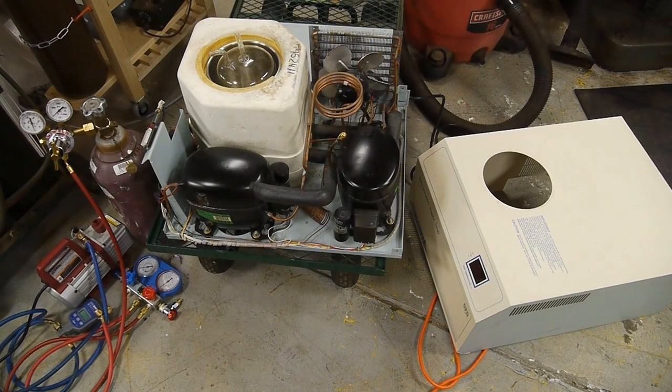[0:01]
Hey everyone, I recently picked up this refrigeration unit at a surplus sale and just got it working last night. So I thought I'd talk about what I learned about the system and how I got it working.
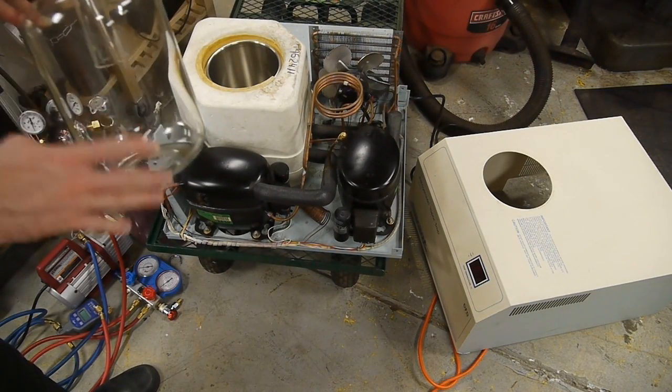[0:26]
This unit is called a cold trap, and the idea is that this chamber here gets down to about -100°C, and you connect your vacuum line to this glass chamber here and submerge this in alcohol to help conduct the cold temperatures into the glass vessel. And then as you're pumping down a system with your vacuum pump, it's so cold on the exterior of this chamber that all the impurities in your vacuum line will get condensed, solidified into here, and won't go into your vacuum pump.
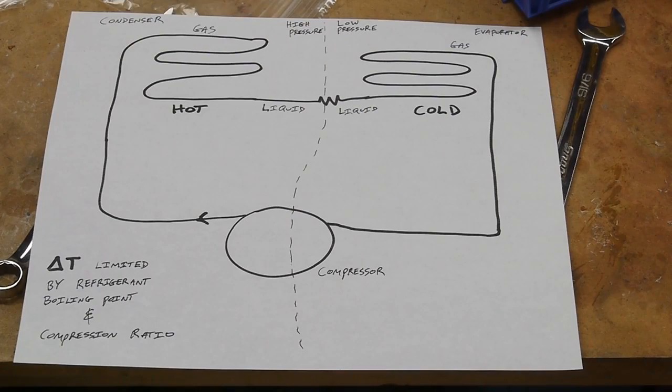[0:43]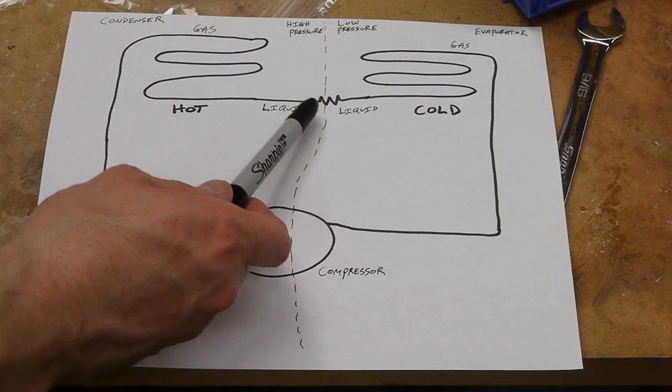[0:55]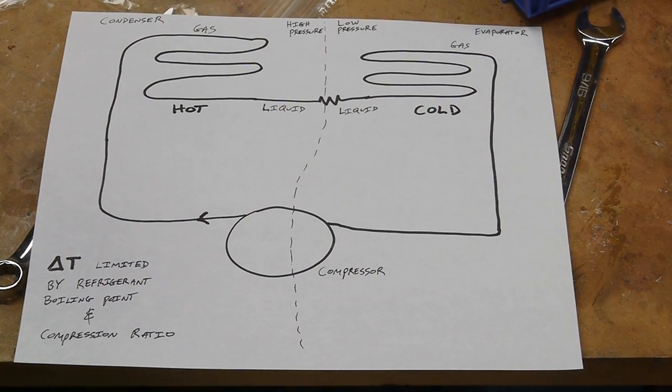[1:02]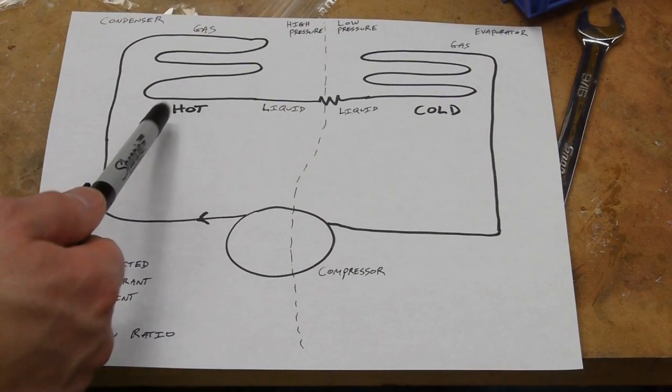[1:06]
In a basic phase change refrigeration system, we have a high pressure side and a low pressure side. And the two sides are divided by the compressor itself and a restriction here. And this is very often a capillary tube. So if you ever look into a refrigerator and see a coil of small diameter copper tubing, it's most likely serving as this resistance between the high pressure side and the low pressure side.
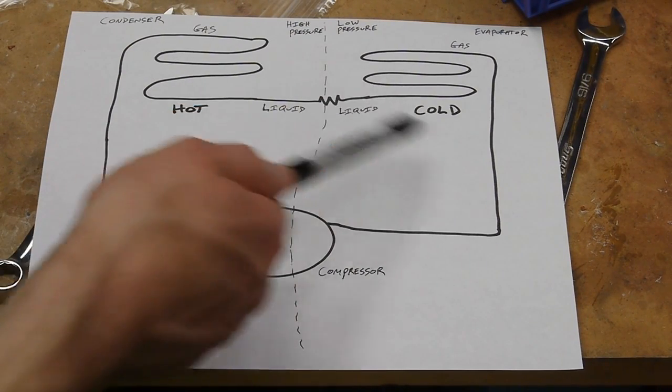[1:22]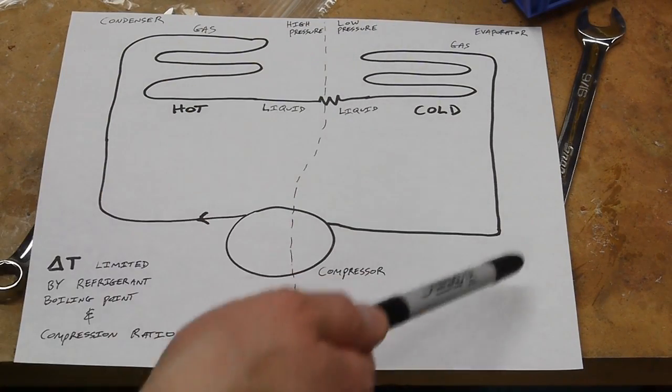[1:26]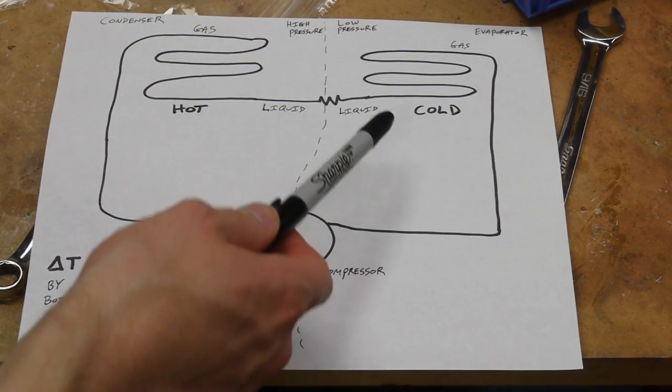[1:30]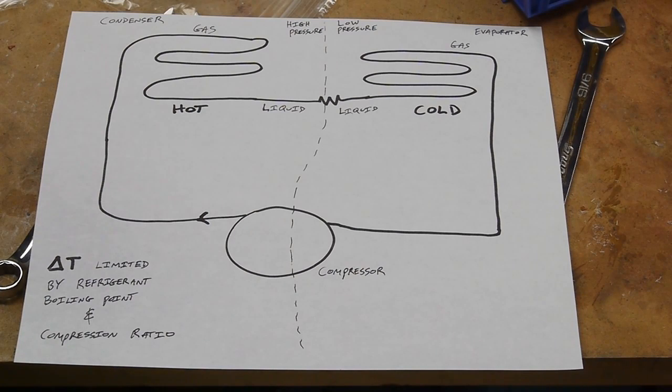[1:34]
So the way this system works is the compressor raises the pressure here, and when we extract heat from that compressed gas, it condenses to a liquid, which gets sent over to the cold side of the system. And since the pressure is lower over here, that liquid will now evaporate, turn back to a gas, and complete the cycle. So we get a large amount of heat moved from here to here, and we're making use of that phase change point in the refrigerant.
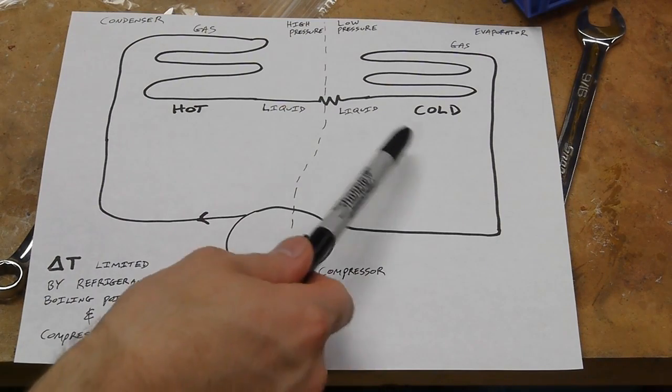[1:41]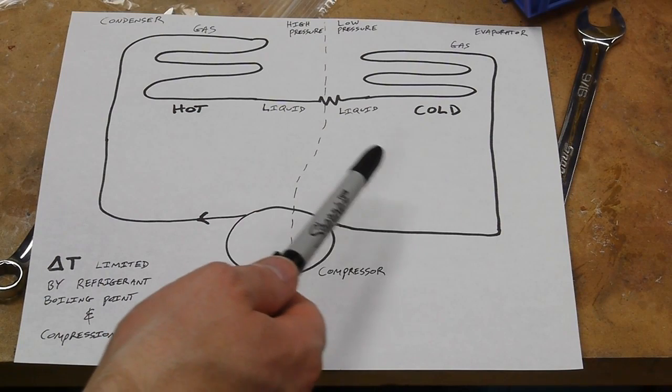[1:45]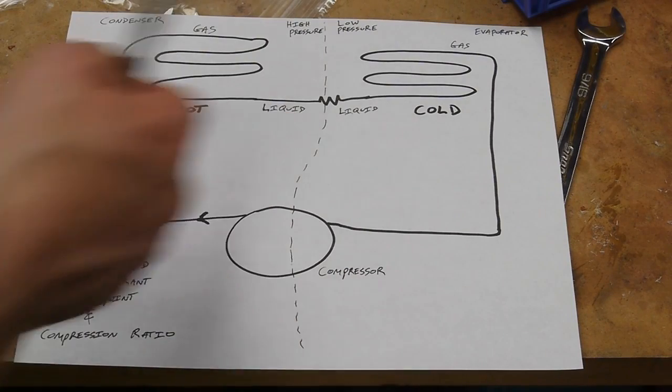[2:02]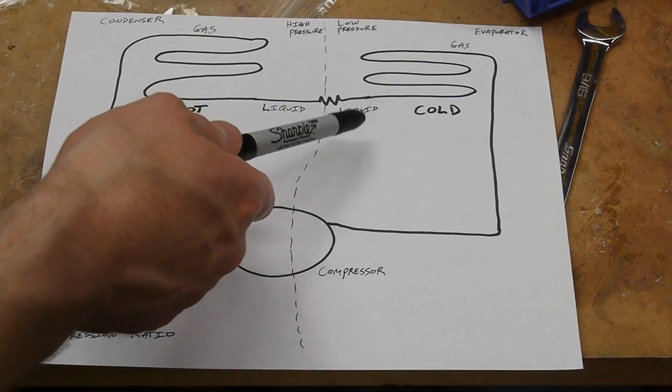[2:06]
So what if we want to make a system that gets very cold? What if we want -100°C here? How come the system doesn't just get colder and colder as it's moving heat from here to here? The answer is that it depends on the fluid properties of the refrigerant. So if the refrigerant itself boils at -40°C at a very, very low pressure, it almost doesn't matter how good the compressor is. Once this cold side gets down to -40 or a little bit below, that liquid is not going to want to evaporate, and we're not going to get much more heat transferred.
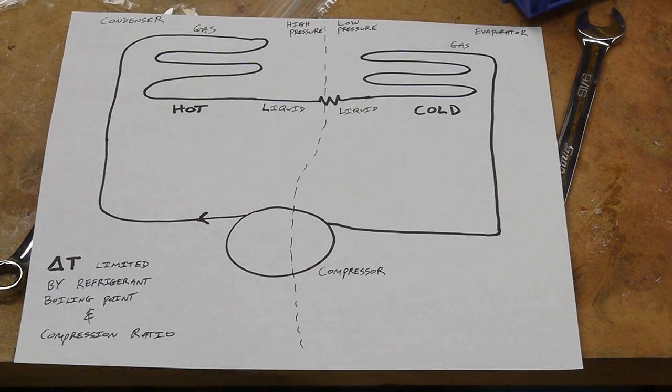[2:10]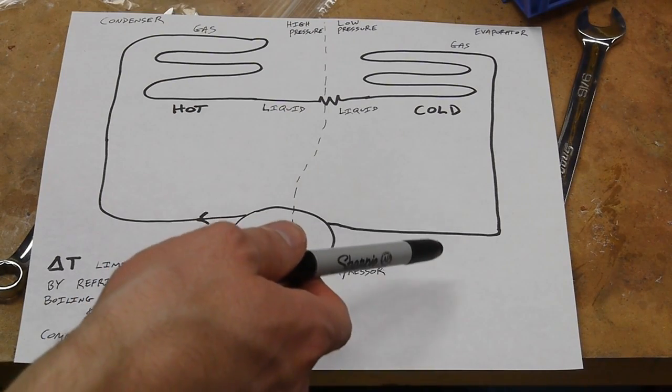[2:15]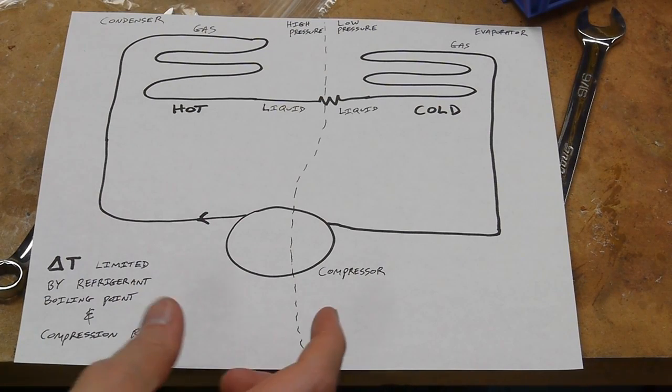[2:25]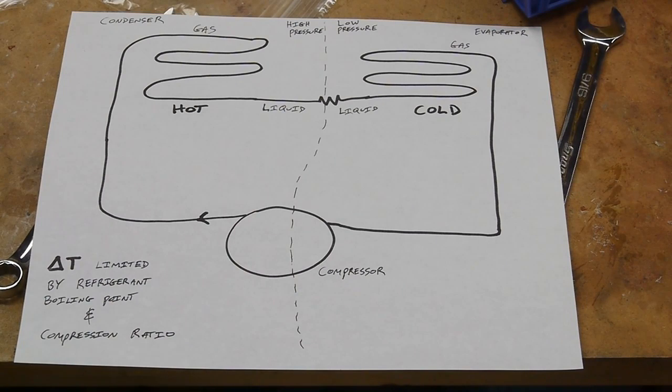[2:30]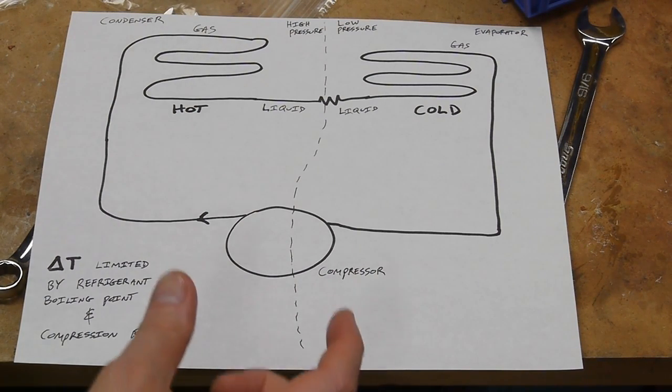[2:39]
Now you could say, well, I just want a bigger and bigger compressor, and I'll just make the pressure lower and lower here, and eventually that liquid will boil because we can always get the pressure arbitrarily low enough. But it becomes a hugely diminishing return, and the bigger the ratio of compression across your compressor, the lower the efficiency of the whole system. So if we want a -100°C refrigerator, it's very impractical to do it with a single refrigerant like this, just because for a given material, our compression ratio would have to be enormously high to make it work.
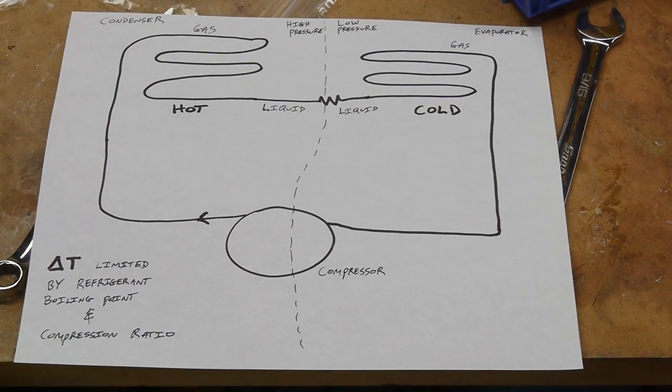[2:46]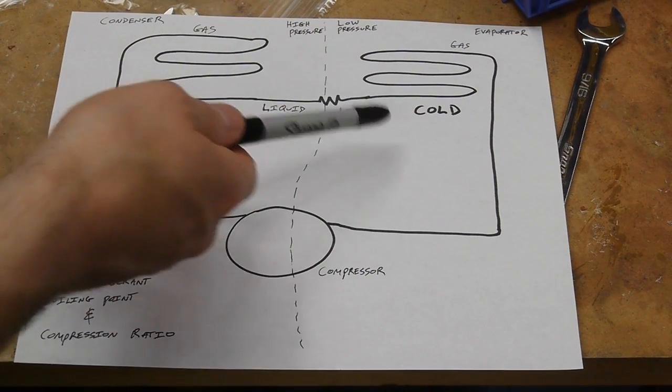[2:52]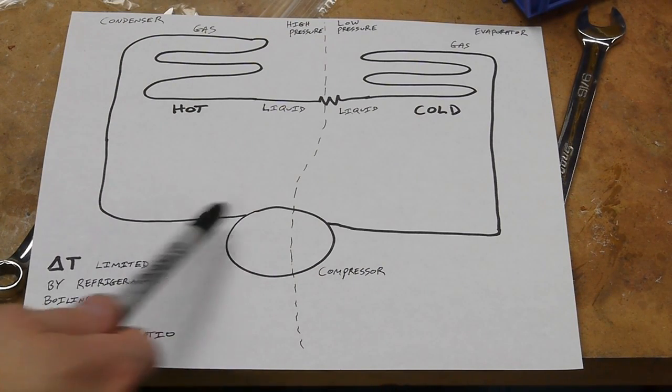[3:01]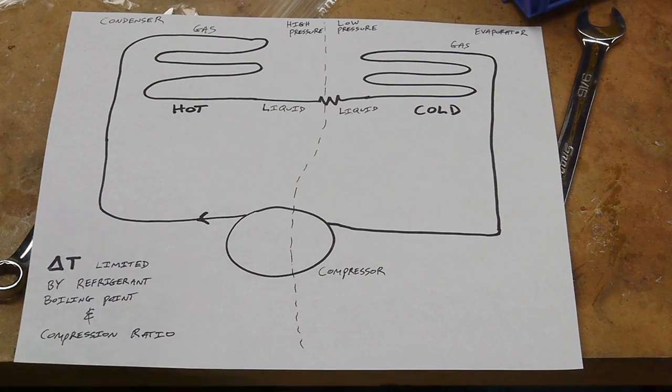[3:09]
Like for example, if we had a substance that boiled at -150°C so that we could still have a phase change here, the pressure ratio might have to be 50 or 100 to 1. And that makes other parts of the system difficult too, since now the copper tubing here has to be thick enough to handle the really high pressure over here, and the compressor has to be extremely over-specced to have such a really high compression ratio across it.
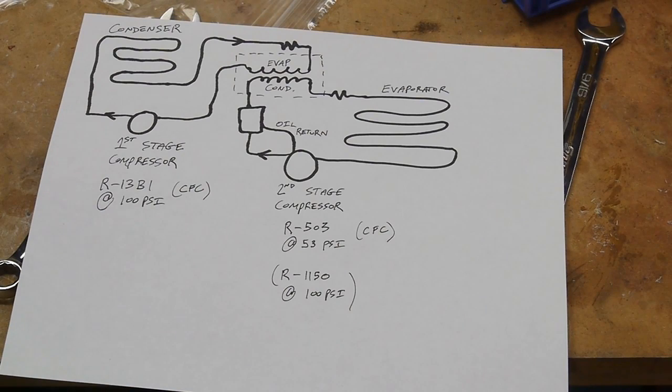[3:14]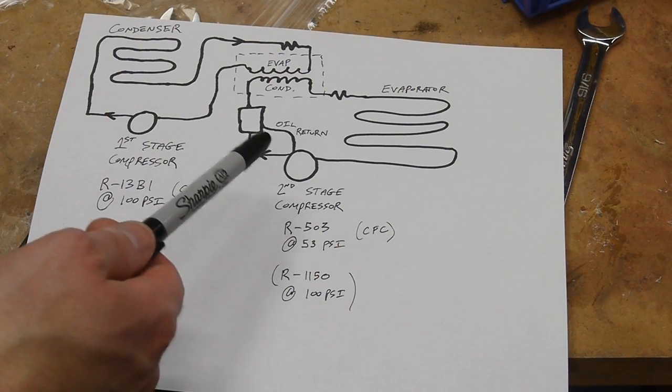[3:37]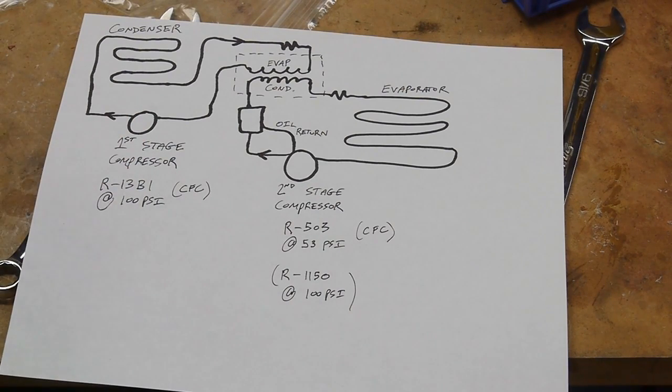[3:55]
So one solution to this problem, but not the only one, is to break our job into two pieces. So this is called a two-stage refrigeration system, or a cascade refrigeration system. And the idea is that the first stage will take us down from room temperature to an intermediate low temperature, and we can select a refrigerant that boils at an appropriate point for that. And then we'll have a second stage refrigeration system that takes us from that intermediate pressure down to the very low pressures, and we can choose a different refrigerant for that, which is better tuned for that really low temperature operation. So essentially we've taken that massive compression ratio and spread it across two different compressors, in fact two different systems with different refrigerants.
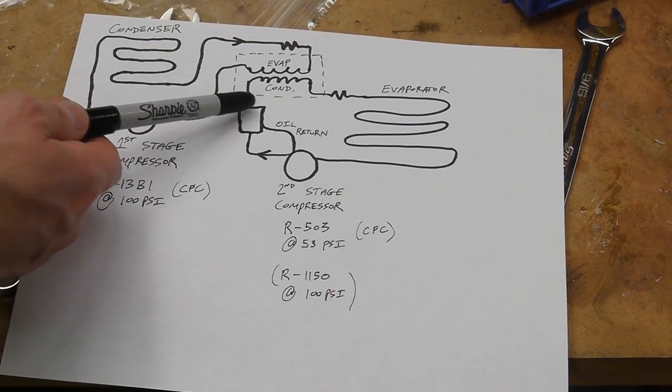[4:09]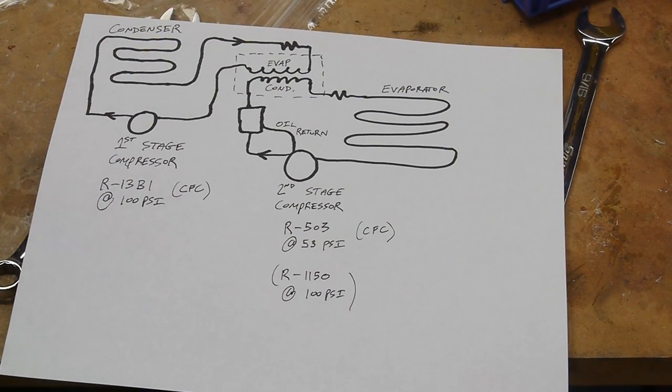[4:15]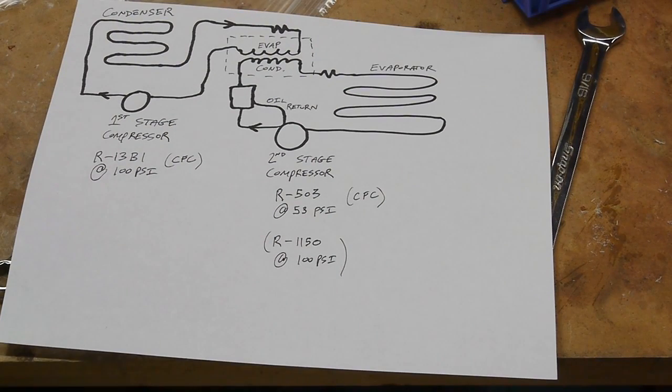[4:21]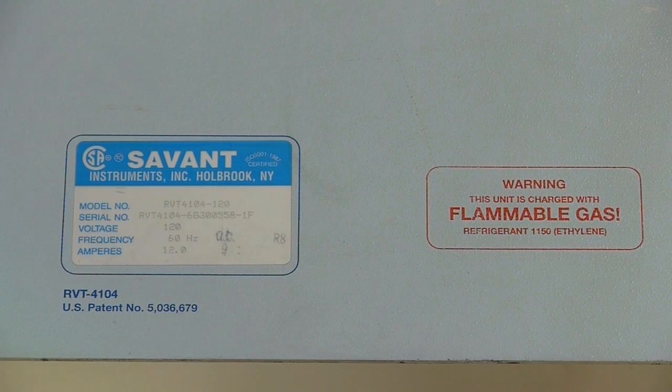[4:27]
In this case, the condenser in this cold trap unit operates above ambient, probably 40 or 50°C. The heat exchanger where the two systems join together is maintained at about -15°C or even -20 or -25, and then the cold side is about -100°C. So the manual specified two refrigerants that should be used in the system. However, there's a decal on the side of the unit that actually says it's charged with R1150. And I'll show you in a minute that I opened the system up and found evidence that it looks like the refrigerant had been changed in it.
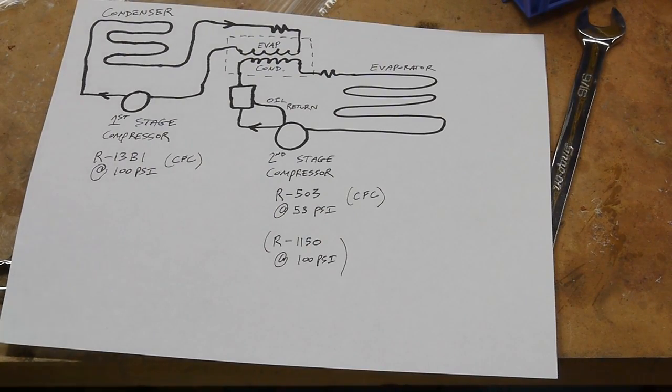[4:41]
I should also note that in most refrigeration systems, the amount of refrigerant in the system is usually stated in terms of mass. So if you go to charge your car with R134A, it'll say it needs, you know, 1.5 kilograms or something like that. And the reason is that when you add it to your car, at the pressures required to have it in the system at ambient pressures, there will be a gas-liquid mix inside there. So you can't really just measure it. You can't measure the amount of stuff in the system just by checking the pressure, because the pressure will always be the same until you completely fill the system with liquid, because there's this equilibrium between the gas and the liquid in there.
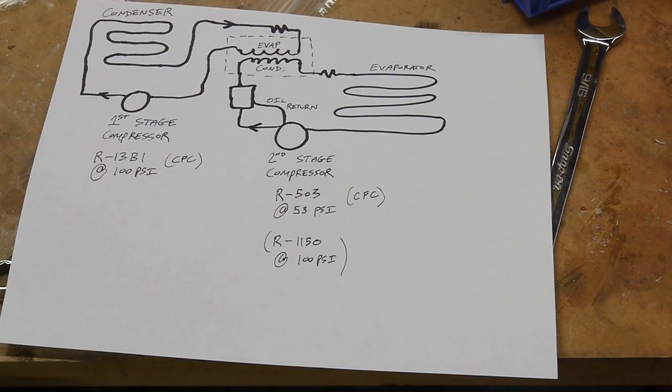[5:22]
In these low temperature systems, the refrigerant is always a gas at ambient temperatures and pressures within the system, the baseline pressure. So if we know the ambient temperature, we can use a gauge just to figure out how much substance is in the system, just because it's linearly related, just because it's a gas at all times.
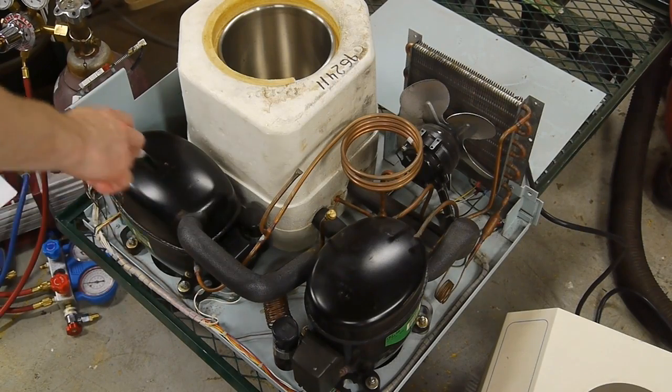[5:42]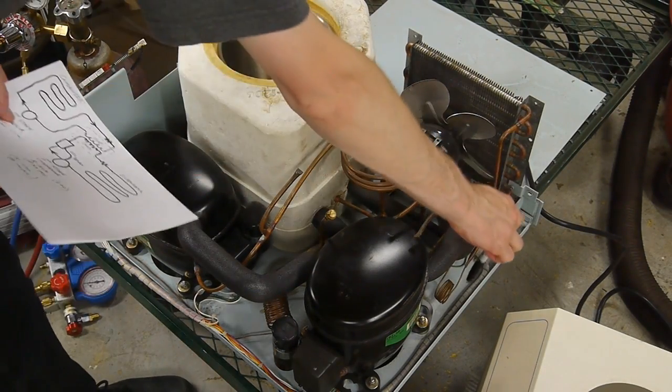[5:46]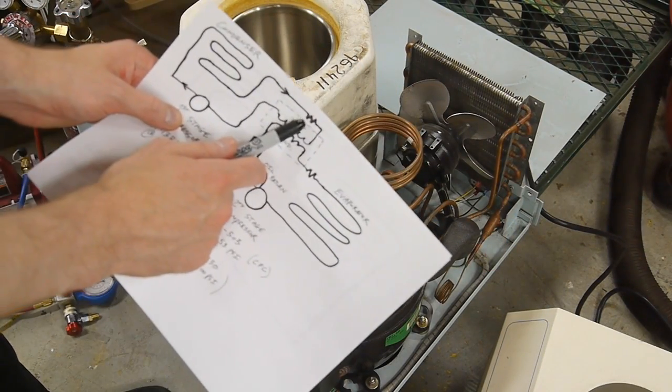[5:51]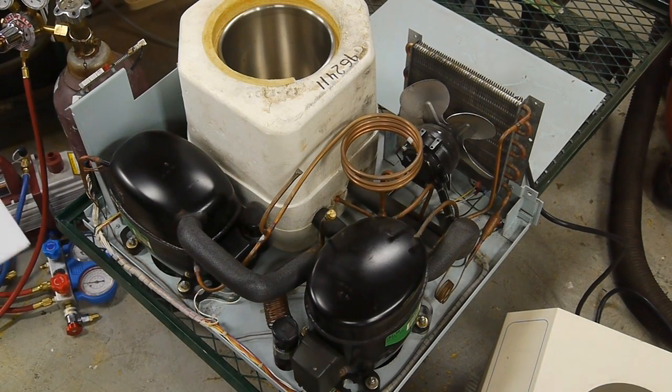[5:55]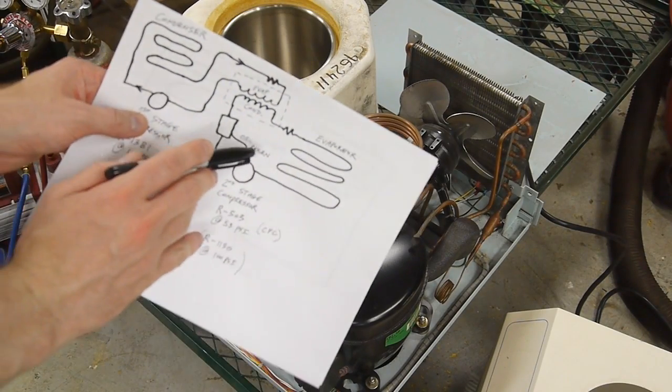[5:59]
So here we can see the two compressors. This is the first stage and this is the second stage compressor. Here you can see the capillary tube, the restriction in the first stage system, which is here. This is actually another capillary tube, but that's not the restriction in the second stage system. It's actually this tiny oil return line.
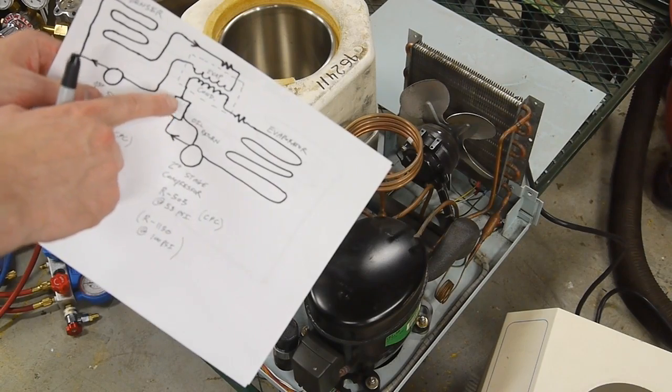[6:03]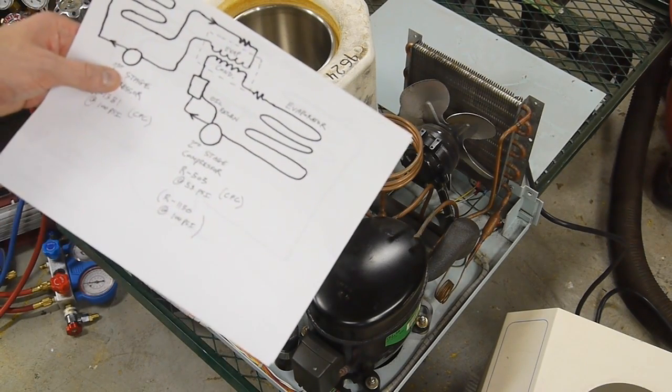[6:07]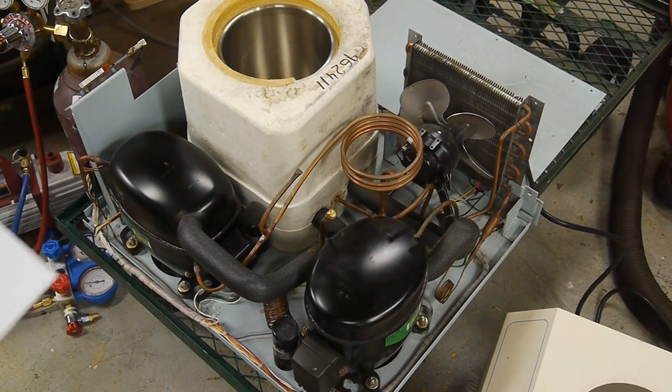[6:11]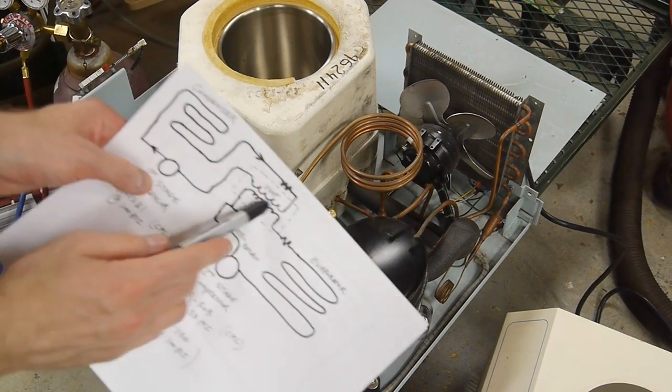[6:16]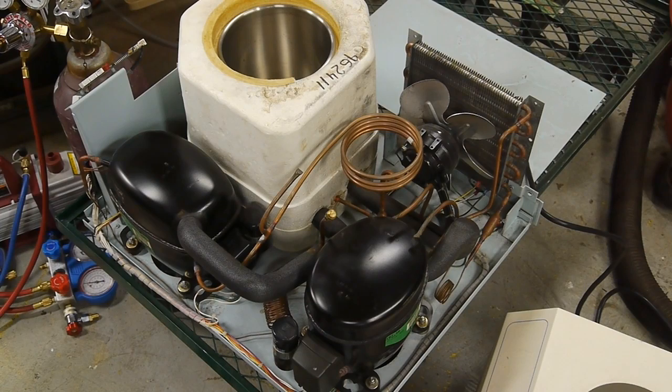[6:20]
And so the trick is that there's an oil separator, and there needs to be a restriction to keep all the pressure from going back through this oil return line to the compressor. So that's what this small line is here going back to here. That's just to get the oil out of the system. The heat exchanger itself is buried inside the styrofoam shield unit, and the cold side is actually wrapped around the stainless chamber here.
So when I first turned the unit on, the front panel indicated that the heat exchanger temperature was correctly down to about negative 15 degrees C, and both compressors were running, but the cold side of the unit was not getting cold at all. I mean, it wasn't even going a few degrees below ambient. And both compressors were running, and so all the electrics seemed fine. So that really narrows it down to just two problems. There's either a blockage in the second stage system, or there's a leak.
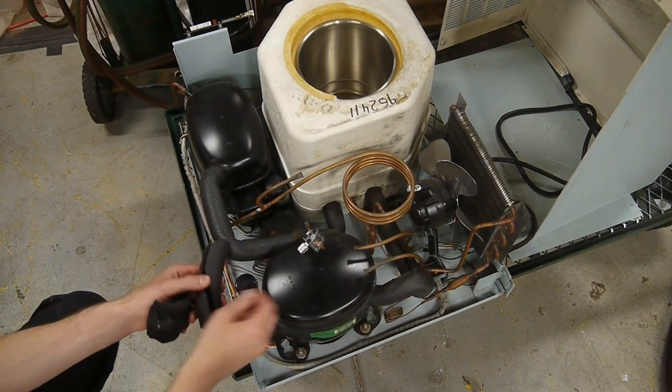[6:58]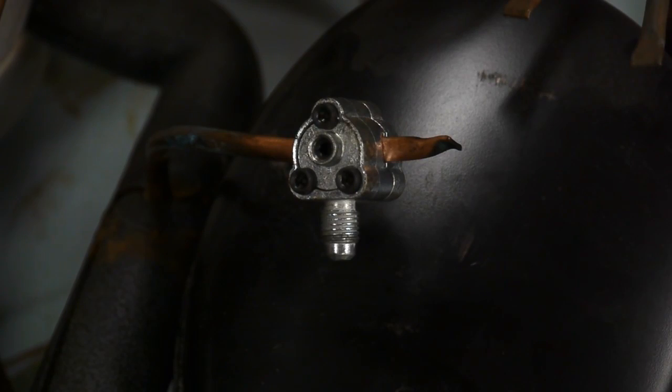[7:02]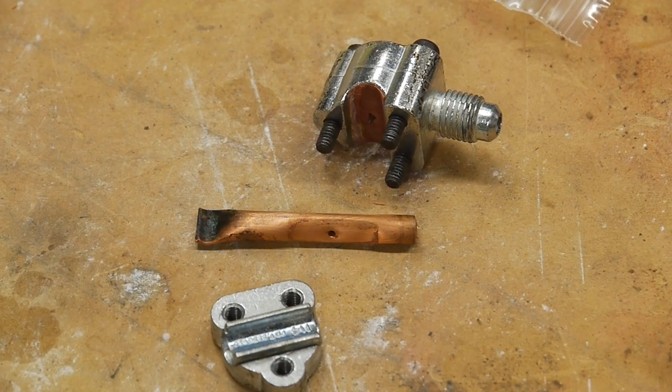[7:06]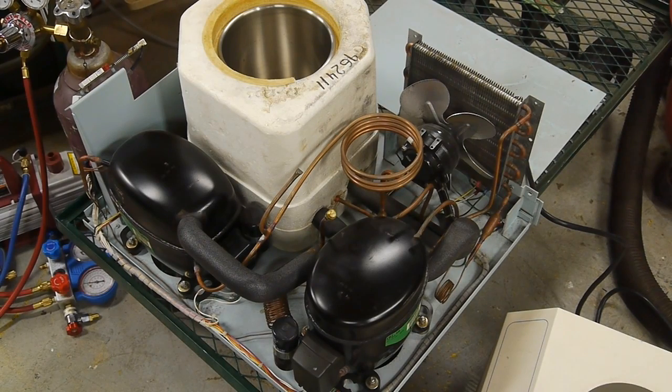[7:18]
After I took the unit apart, I noticed that there was an aftermarket clamp-on sort of vampire tap on one of the fill ports for the second stage system. This is almost certainly not a factory piece, and since the manual specs a chlorinated fluorocarbon for the second stage refrigerant, but there's a decal on the side of the unit that says R1150, which is ethylene gas, I'm guessing that at some point in this unit's history, someone replaced the second stage refrigerant.
Now, it's understandable to use one of those vampire tap things to remove refrigerant, because there's no other way of sort of breaking into the system. There's no ports on it. See, the only way that we can remove gas is by using one of those vampire taps. The problem is that they leak, and so you can't really use that as a permanent solution.
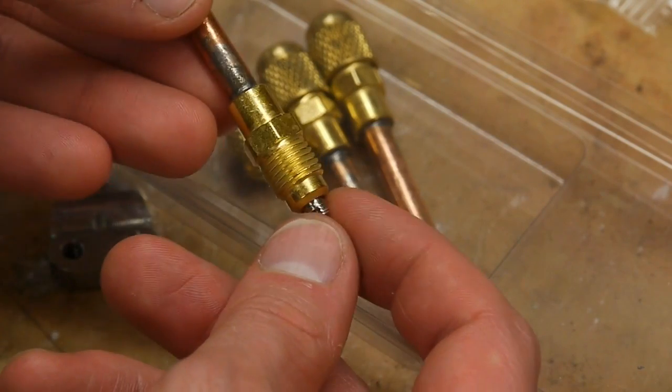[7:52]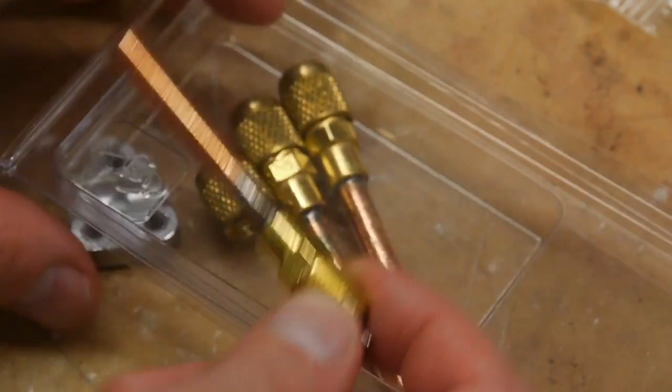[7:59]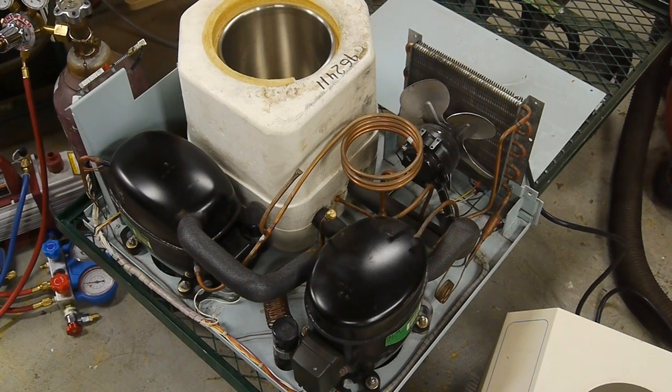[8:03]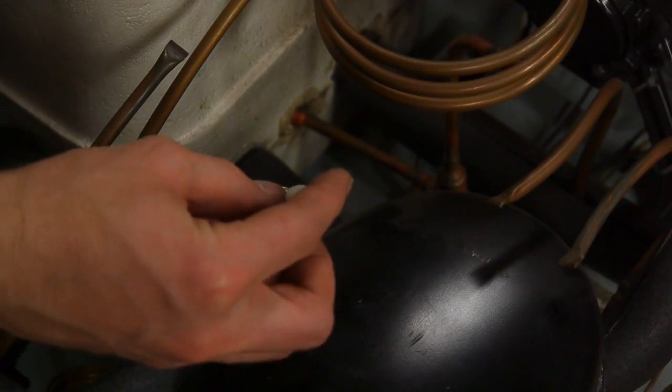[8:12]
So my plan of action here was to cut off the vampire tap and replace it with a more standard connector. So this still has a Schrader valve inside there so that we can fill and then, you know, remove gas later and fill it again. But there's no seal to the outside of the copper pipe. So basically it's a solder-on type of system. And then once the valve is installed, there's a much more controlled rubber seal there. Whereas with the vampire tap, it's not as easy to seal to the outside of the copper pipe.
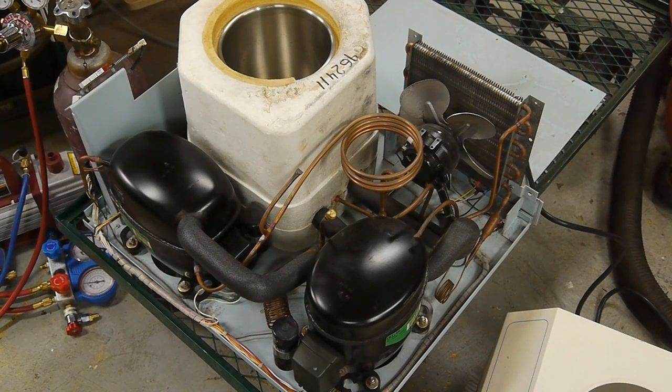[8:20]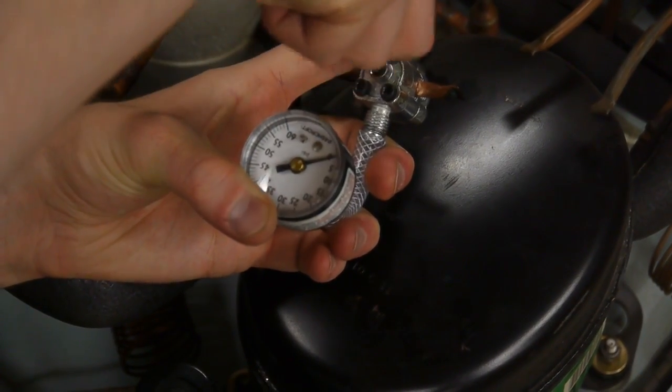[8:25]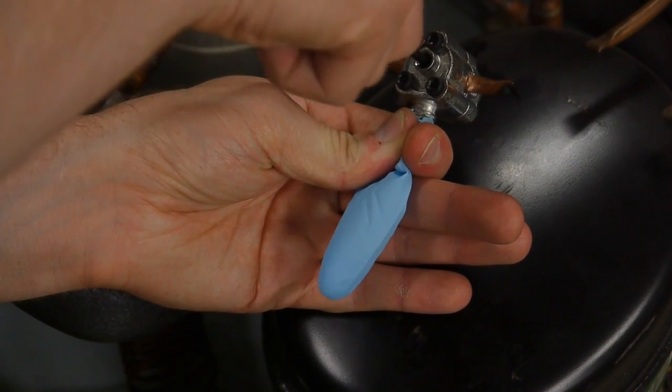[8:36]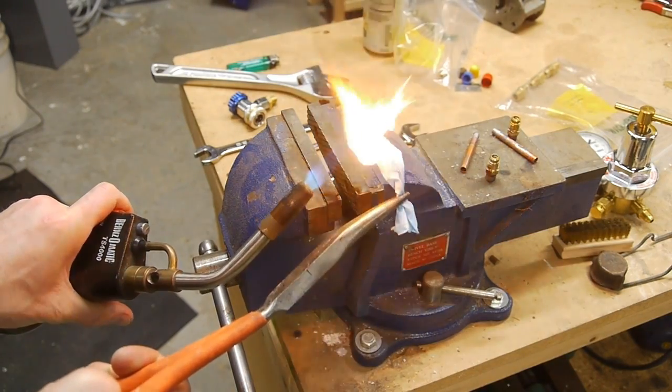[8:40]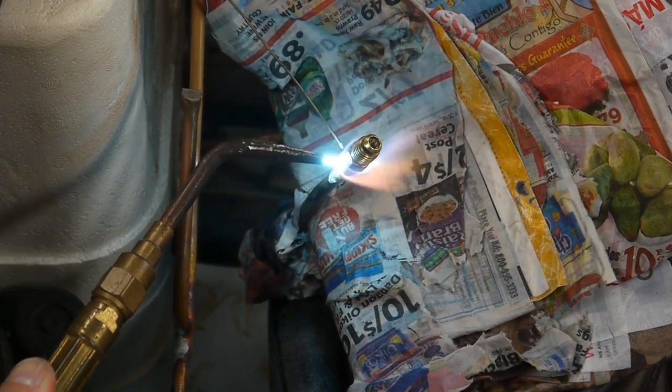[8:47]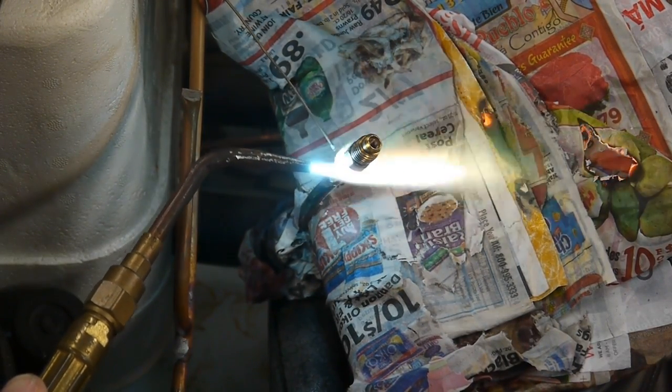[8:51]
First, I wanted to check if there was any remaining gas in there, and so I put a gauge on the existing tap there, and it couldn't even move the needle off the peg, but I could feel a little bit of gas coming out when just putting my finger over the valve. So I filled up a small bit of rubber glove with it and tested to see if it was combustible, just to see if it was R1150 or a non-flammable gas, and yes, it actually did light up, so that was slightly encouraging there.
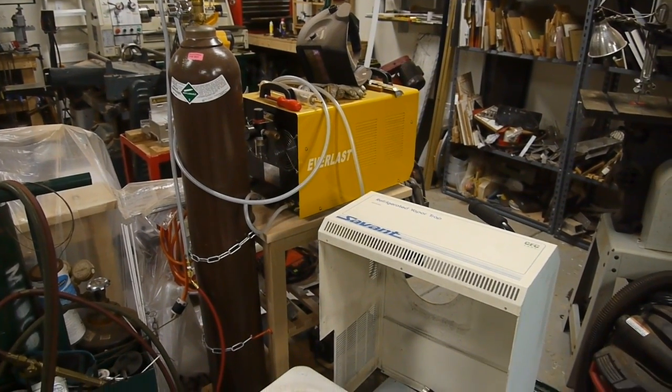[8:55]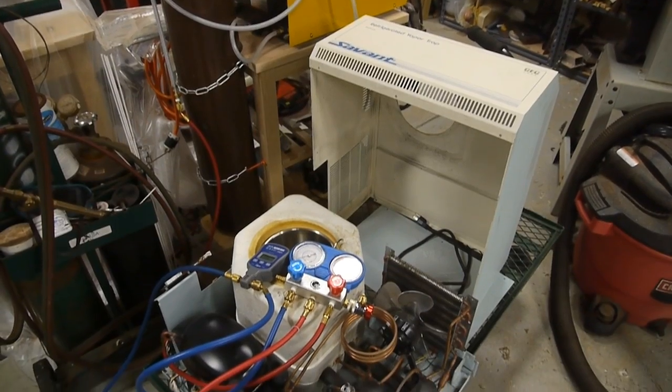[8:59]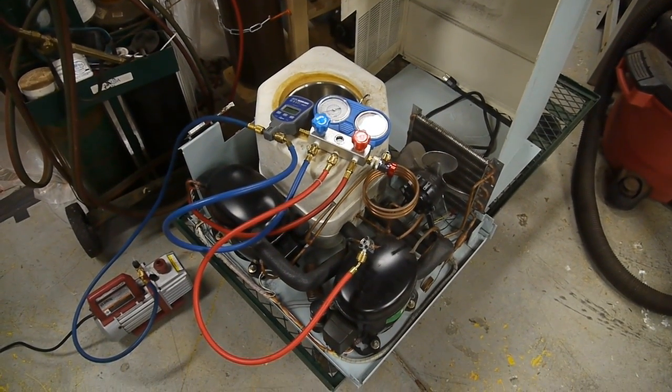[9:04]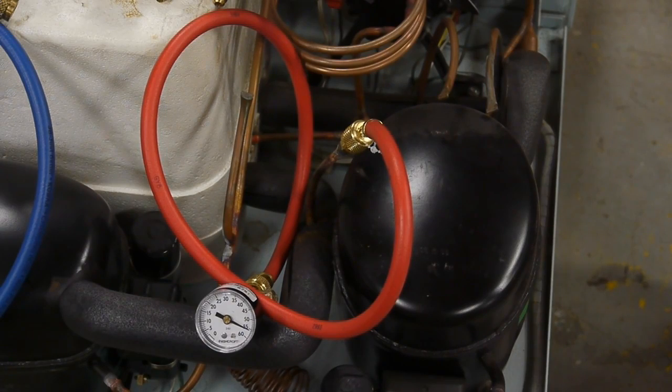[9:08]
Second, since I wanted to do hot work on the system, basically solder on a new fitting, I wanted to get all that flammable gas out of there and replace it with argon. So I hooked the system up to my manifold and pumped it down with a vacuum pump, and then filled the system back up with argon and let it sit at about 40 or 50 psi for a day or two, just to see if there were still any remaining major leaks.
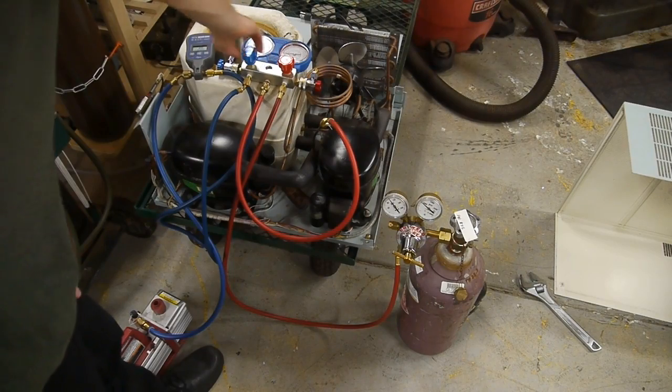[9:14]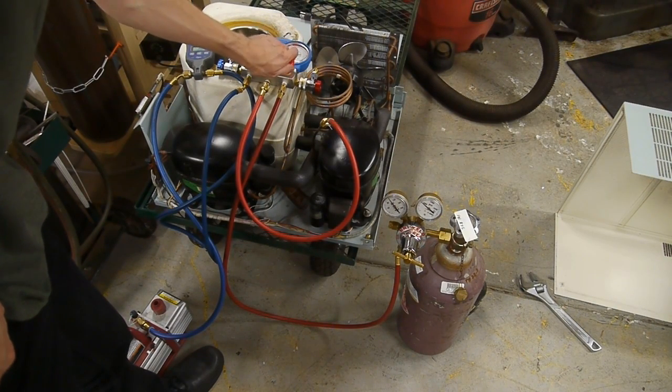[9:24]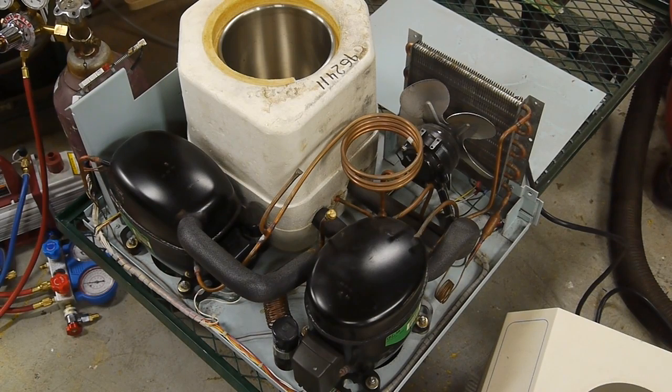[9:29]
Everything looked good, so I set up the manifold again, and this time connected a tank of ethylene to it. Now, this tank is actually the most difficult thing that I think I've ever purchased in my entire shop. I've spent tens of hours tracking down this cylinder of gas, and had I known where to go in the first place, it wouldn't have been so bad, but needless to say, this was really, really a challenging thing to find.
There's very little information available online regarding these ultra-low temperature refrigeration units, and since the manual spec'd an entirely different refrigerant for this unit, I really had no way of knowing exactly what pressure to add the ethylene. So I basically just chose 100 PSI since that seemed like a good round number, and it was close to most of the bits of data that I could actually pull out of the internet.
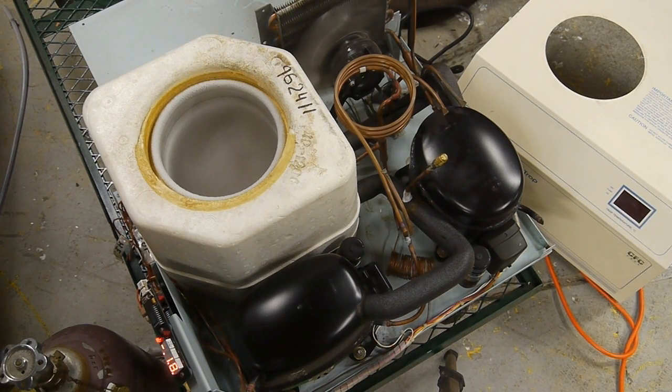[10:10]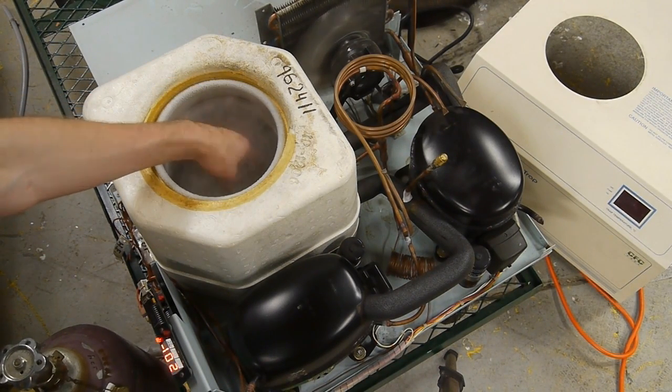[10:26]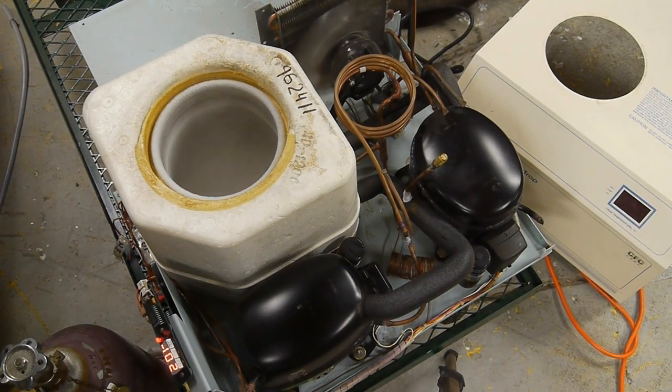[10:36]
The system's been running for about an hour, and as you can see, the front panel indicates negative 102 degrees C, and when it puts the decimal points up, that's indicating the heat exchanger temperature, so negative 18 degrees C at the heat exchanger. And as you can see, there's a bunch of ice crystals and perhaps condensation here, and just putting my hand is enough to cause a lot of convection current. I don't know if you can see that moving the fog around.
It's quite cold. It's colder than dry ice, so if we pumped CO2 in there, it would actually form dry ice. I plan to use this thing as a cold trap, but also to play with cold temperatures in general. So wherever you have to use dry ice, you could use this instead and not need to make the trip to the store.